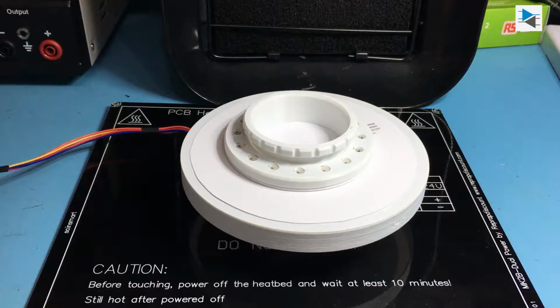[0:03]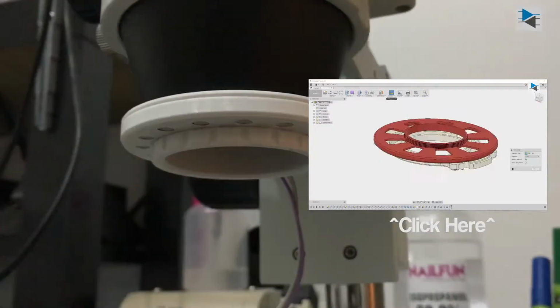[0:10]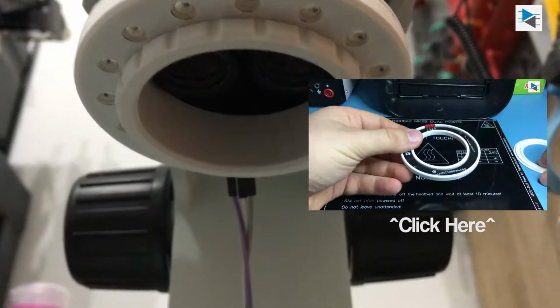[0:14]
In the previous video, we showcased the design of the 3D-printed microscope mount for a NeoPixel clone and talked about a few gotchas along the way. If you haven't seen it yet and are interested, click the annotation here.
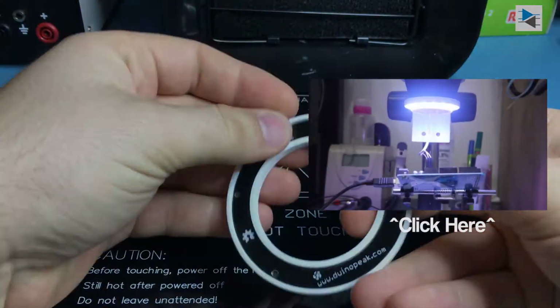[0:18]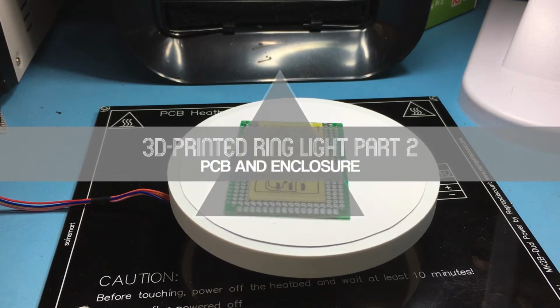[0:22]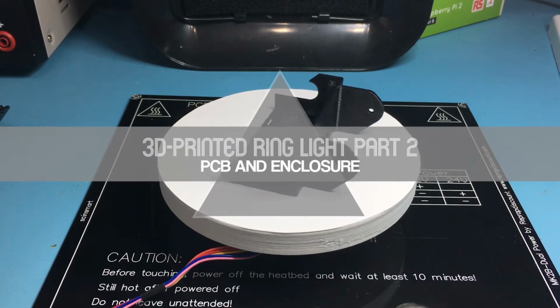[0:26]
It is now time to wrap up this project by designing and fabricating the PCB and its enclosure and getting the prototype software to work on an ATtiny85.
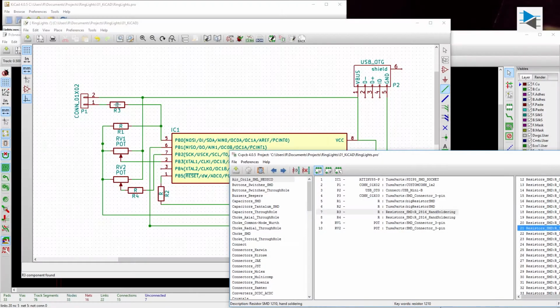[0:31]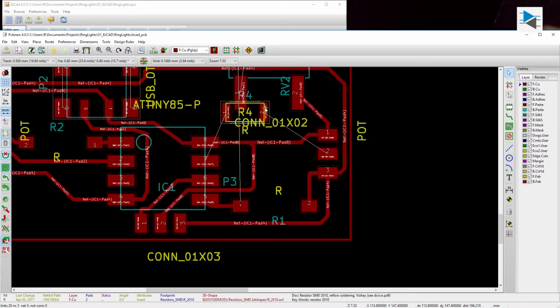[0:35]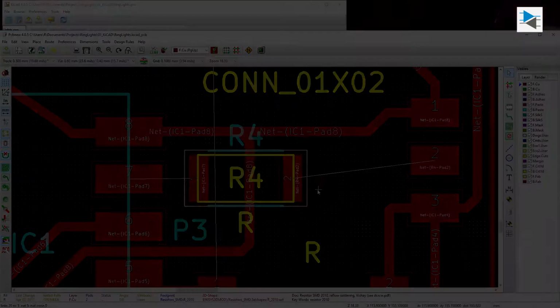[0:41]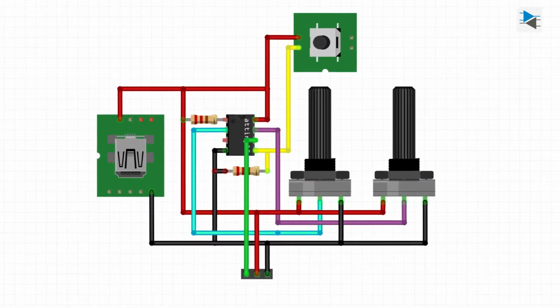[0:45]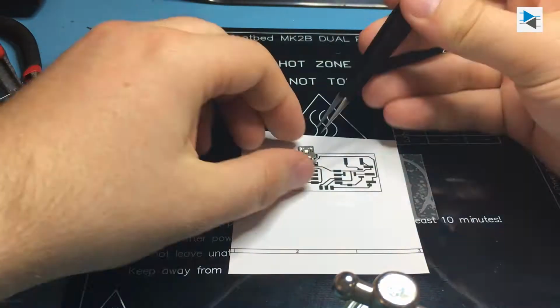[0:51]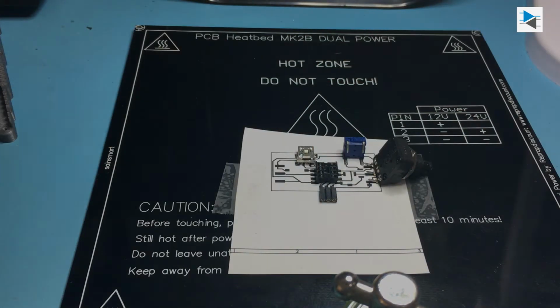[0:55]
The schematic for the control circuitry is fairly straightforward and was designed using KiCad, a free and open source EDA with fairly powerful features. It consists of the ATtiny itself, two potentiometers, a tactile switch with pull-down resistor and a pull-up resistor for the reset pin. Drilling PCBs can sometimes be cumbersome, so I decided to make the board layout SMD friendly.
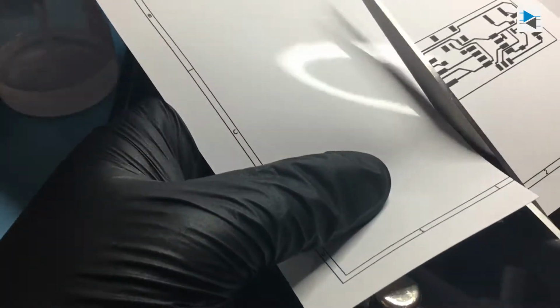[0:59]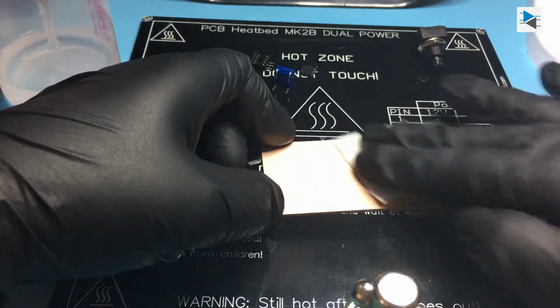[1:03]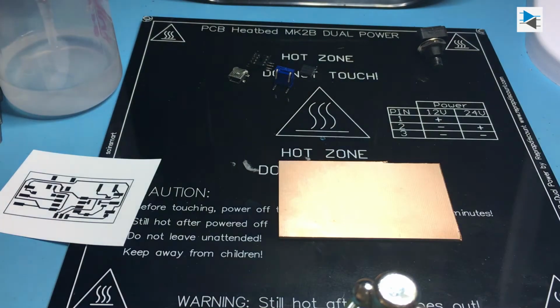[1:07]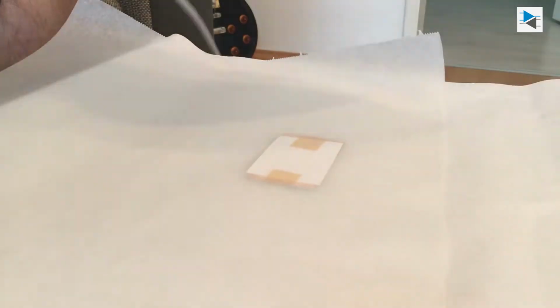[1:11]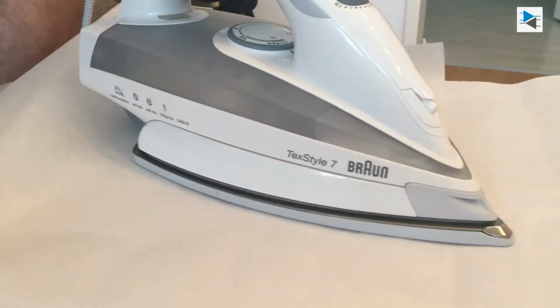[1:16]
For the fabrication of the prototype PCB, the toner transfer method was used, where the design is printed on glossy printing paper using a laser printer and is then transferred to a simple copper board using a common household electric iron. The heat from the iron remelts the toner particles and they adhere to the copper board, acting as an etch resist.
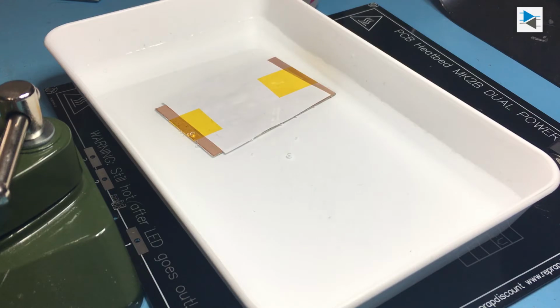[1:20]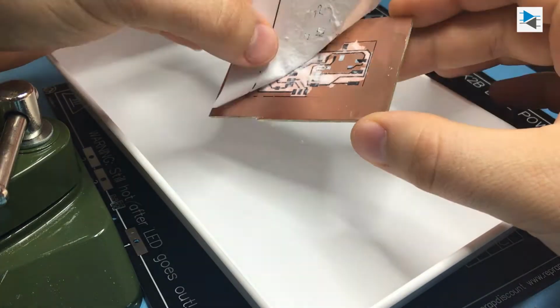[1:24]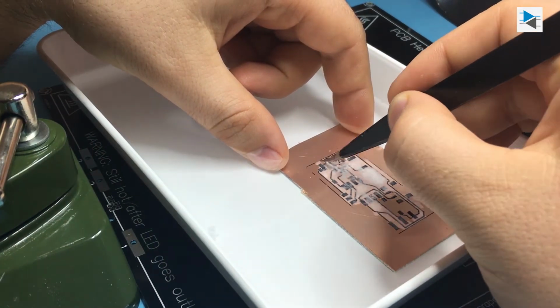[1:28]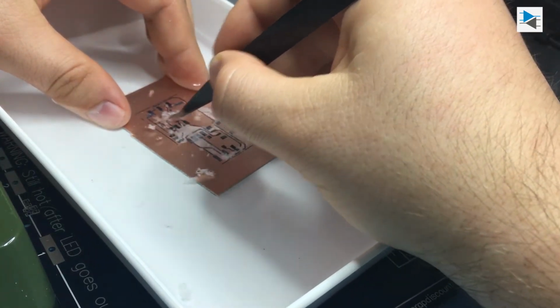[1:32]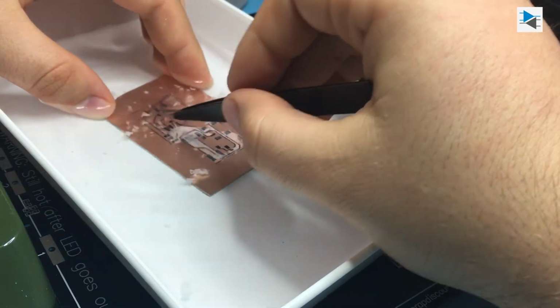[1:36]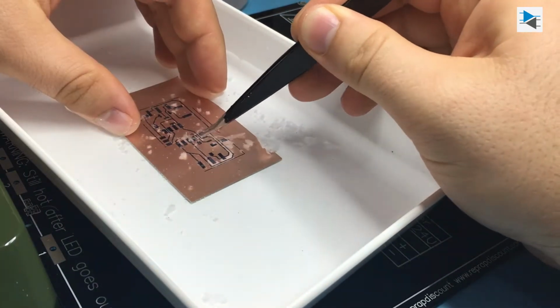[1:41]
After ironing, some cleanup work has to be done to ensure that all of the remaining fibers from the glossy paper are removed from the PCB. It is also critical to ensure that the layout is mirrored before printing, as it gets flipped by applying it to the copper board. Failing to do so is a common mistake, and it also happened here.
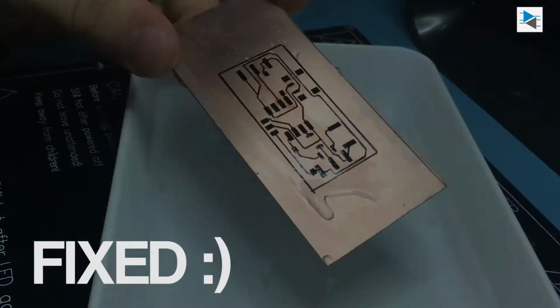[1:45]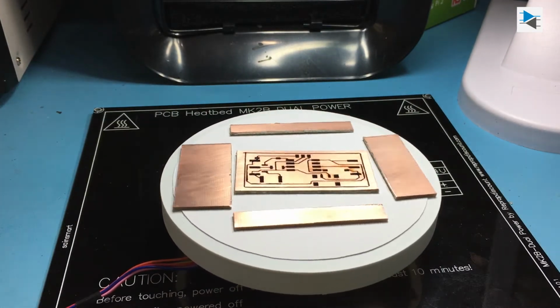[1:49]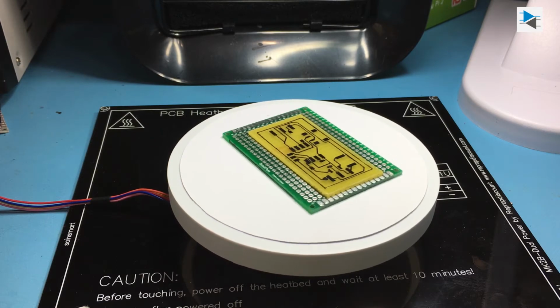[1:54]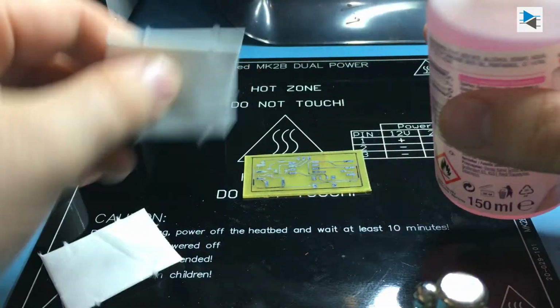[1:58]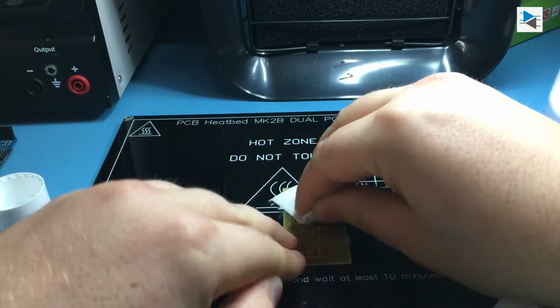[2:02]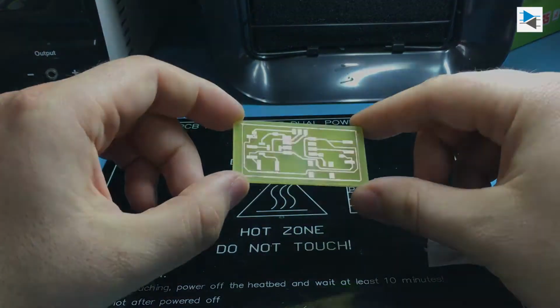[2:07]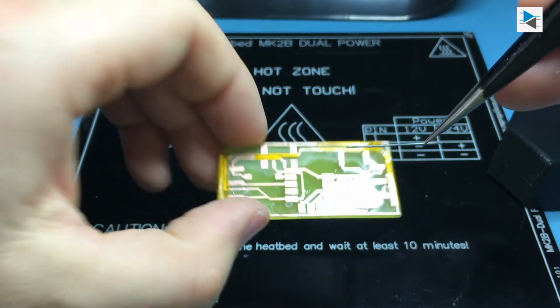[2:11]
The board was etched using ferric chloride, but we recommend either getting the board fabricated or using another etchant, as ferric chloride can get pretty messy and the stains are nigh impossible to remove. Using simple nail polish remover is a very effective method of getting the toner off the copper, thus revealing the shiny traces. As the board doesn't have a solder mask, Kapton tape is used to cover up traces that are in danger of being shorted by other components.
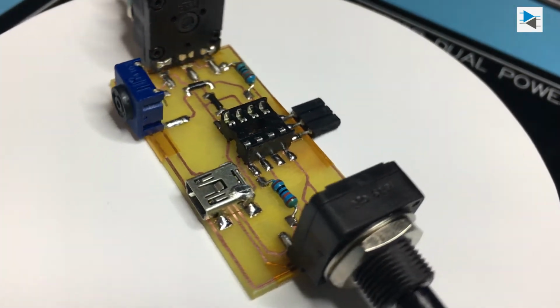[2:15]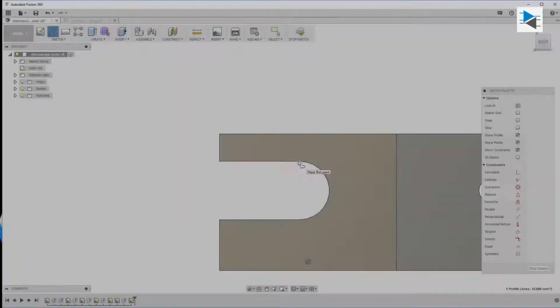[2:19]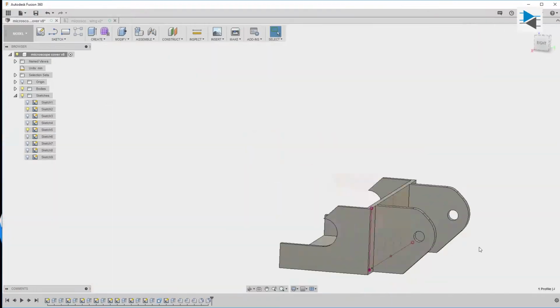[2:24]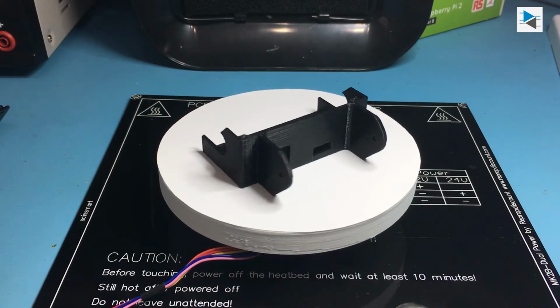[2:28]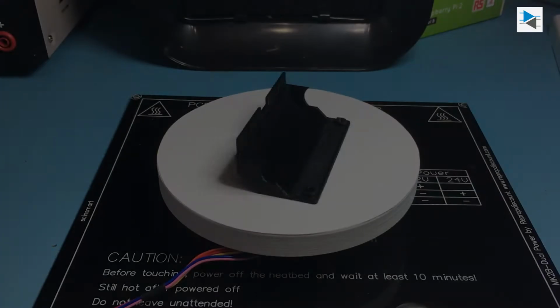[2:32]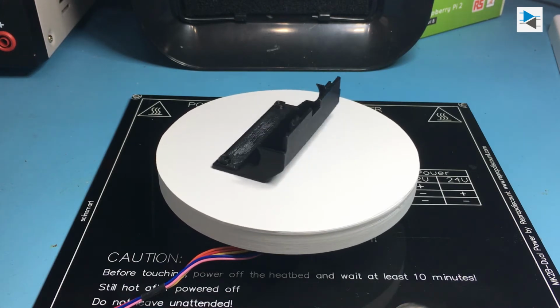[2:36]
After populating the board, it's time to design the case. Fusion 360 is again the tool of choice, and after one or two iterations, the final product is composed of a main piece that holds the PCB, with cutouts for the potentiometers, mini USB jack and tactile switch, and a top cover printed in black PETG that features the cutout for the ring light connector.
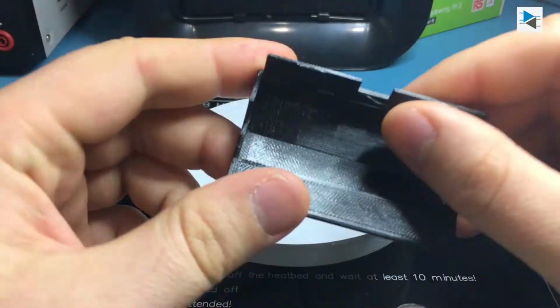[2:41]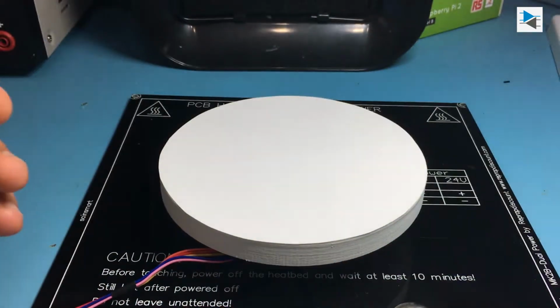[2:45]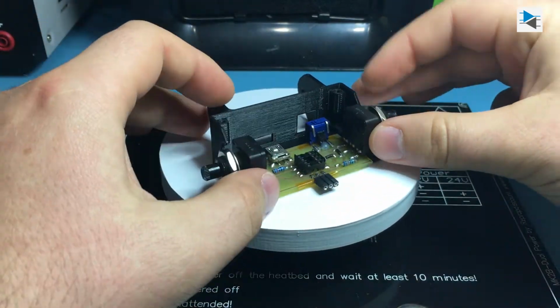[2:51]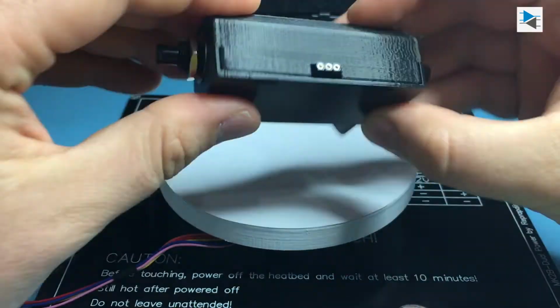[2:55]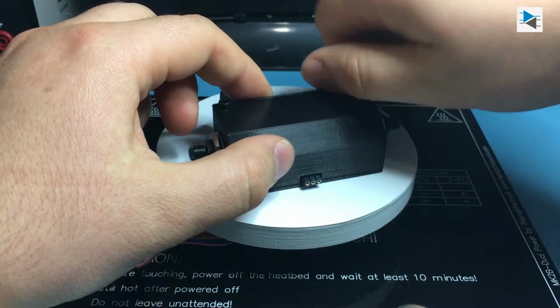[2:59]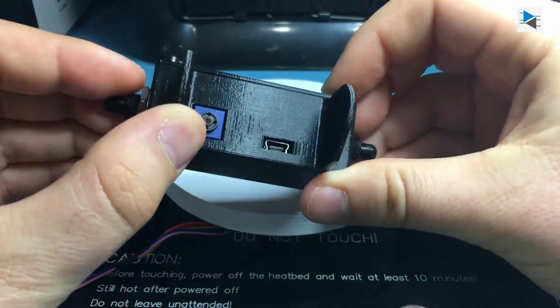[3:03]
As PETG has the tendency to produce very fine hairs when printing, a small propane torch is used to simply burn these away. The PCB is slid into the main part and the tabs of the cover are inserted in their respective slots. The cover is then closed to be secured with two M3 screws. After that, the whole assembly is secured by tightening the nuts of the potentiometers.
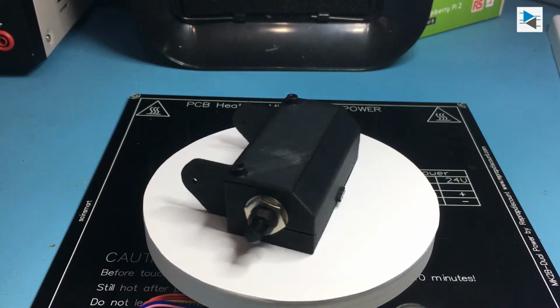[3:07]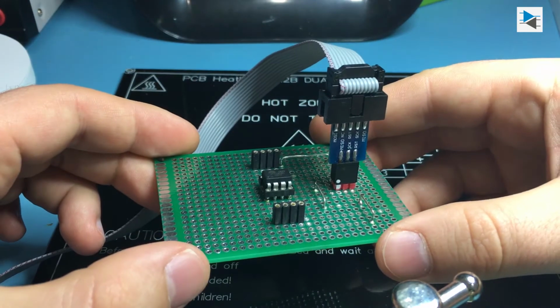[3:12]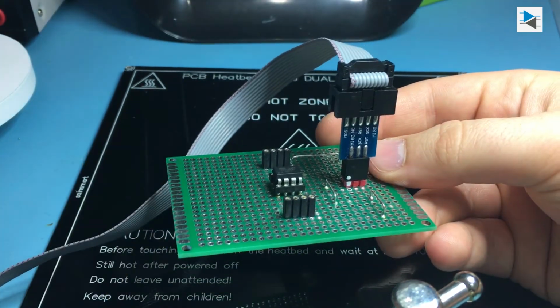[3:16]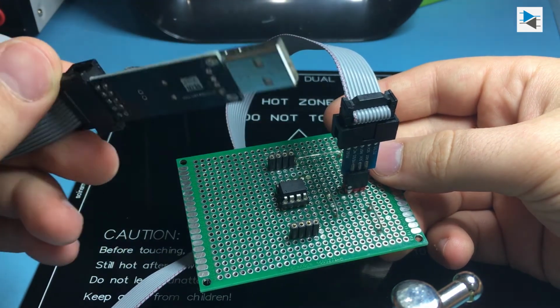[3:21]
The ATtiny85 is programmed with a USBasp clone, which was updated using an Atmel-ICE debugger to get rid of a nagging warning from the Arduino IDE.
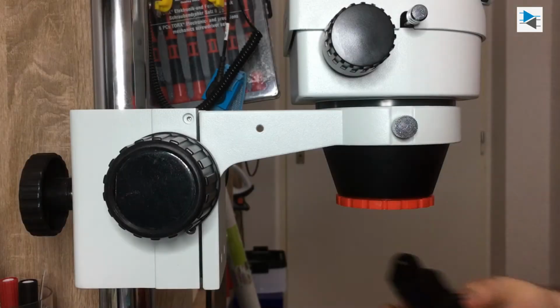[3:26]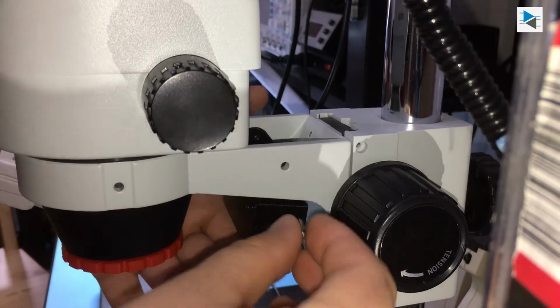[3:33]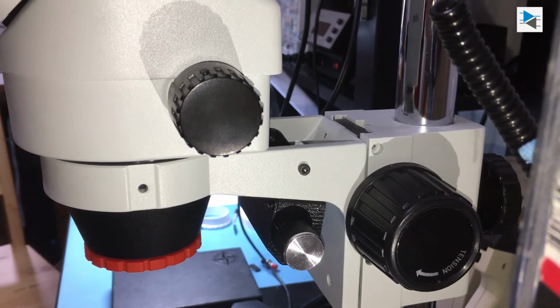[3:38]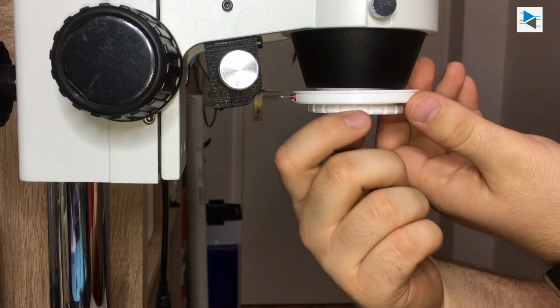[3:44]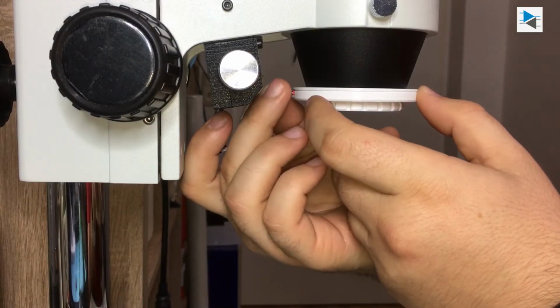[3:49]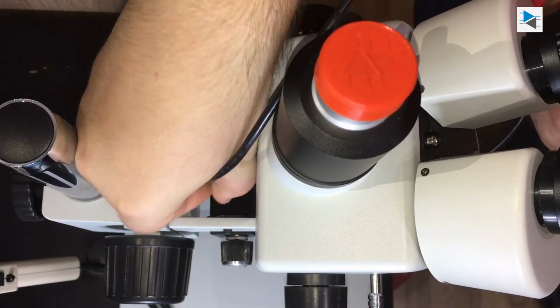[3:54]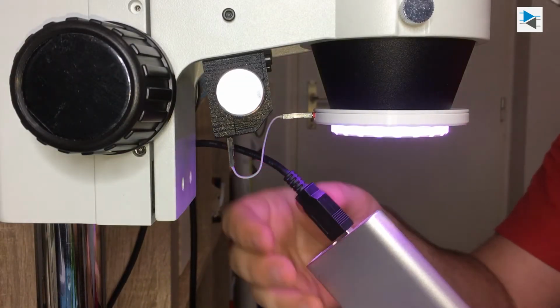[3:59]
The finished control unit is mounted to the microscope support using two holes and two M3 screws. Threads for the screws have been cut into the 3D printed part beforehand using machine taps. Next, the ring light assembly is screwed onto the microscope using the lens cap thread. After that, it's only a matter of connecting the NeoPixel clone to the control unit, plugging in a mini USB lead, and connecting it to either a standard USB charger or, in this case, a power bank.
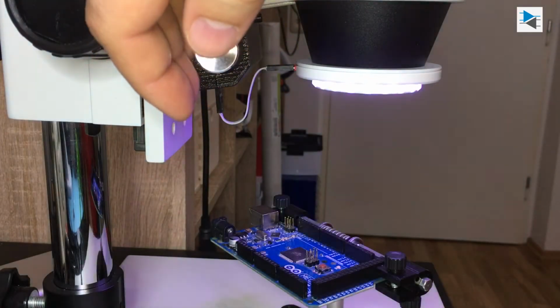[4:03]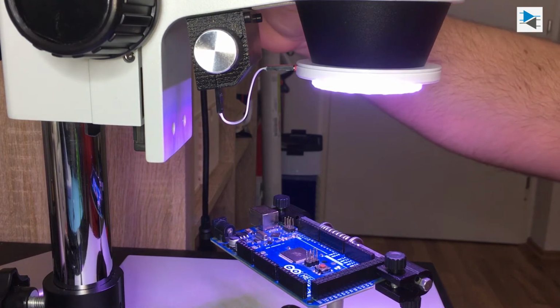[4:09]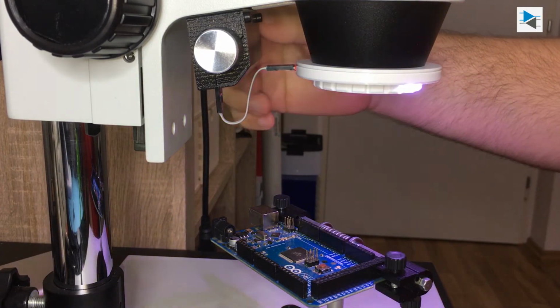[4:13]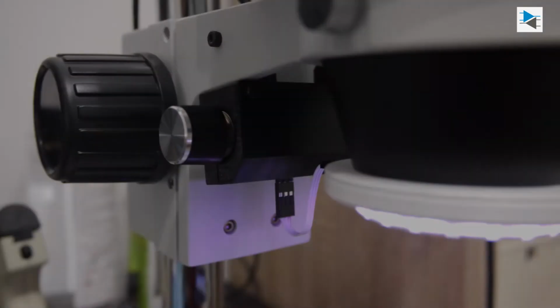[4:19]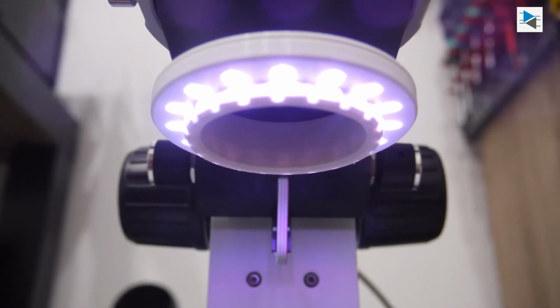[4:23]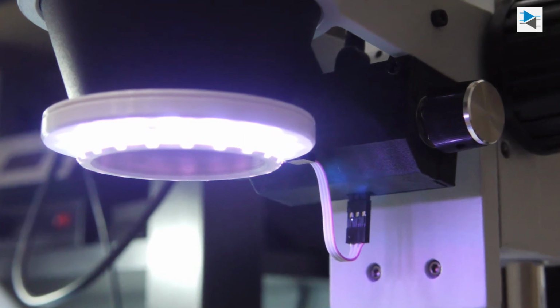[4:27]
The left potentiometer controls the brightness of the ring light, the tactile switch changes the modes to adjustable light source, and the right potentiometer controls the position of the light source. Future modes that feature color changes are on the to-do list, but the degree of functionality, for now, is sufficient as it is. And that about wraps it up for this video.